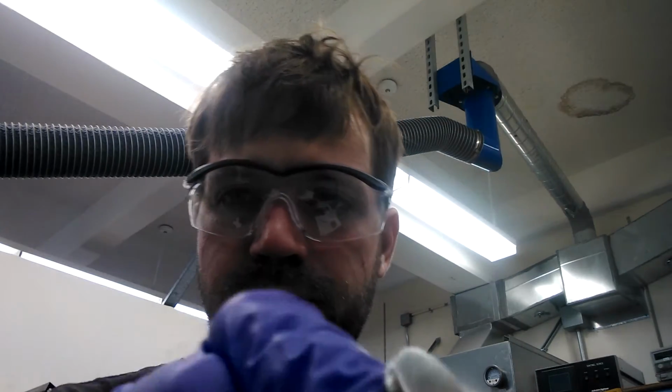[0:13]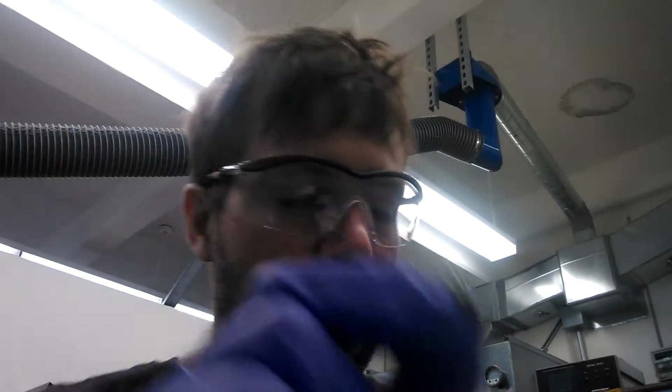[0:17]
All right, today we are going to polish aluminum to the scientific grade for scanning electron microscopes. What we have is these very small targets. And as you can see right now, it's already pretty shiny. If you get a close-up look though, it is not a mirror yet. So what we've done is we've sanded these already.
We took a 180 grit sandpaper, we ground down the surface so that all the flaws were out. We moved up to a 400, 600, 800, 1000, 1500, 2000, 3000 grit sandpaper, one at a time until we've removed all of the surface scratches, everything that's pretty deep. And because you need the surfaces to be parallel when you put it in the scanning electron microscope, we made sure that we had this on a flat surface. We just put down a pane of glass and then we sand it on top of that. And that keeps everything very, very flat.
The first step is to clean off everything. We can do that with just water. We can just rinse it off. But the second step after polishing is to clean everything with an ultrasonic agitator, because if you have any particles left on there, they're going to look really big in the scanning electron microscope. So this is how we're going to do the final polish.
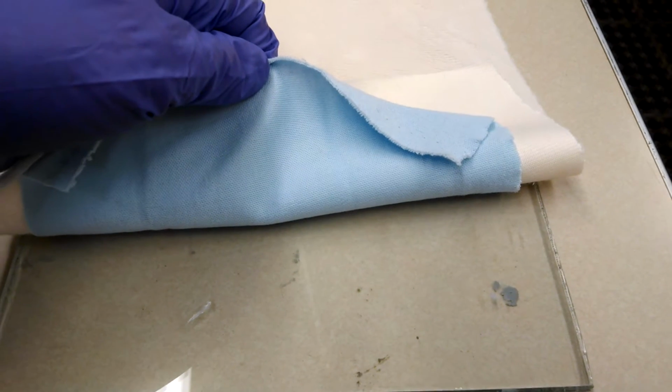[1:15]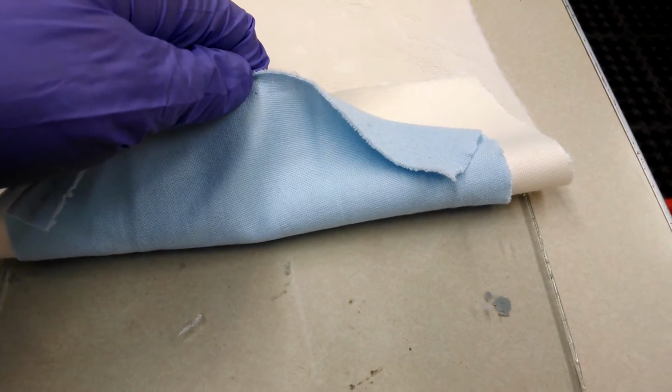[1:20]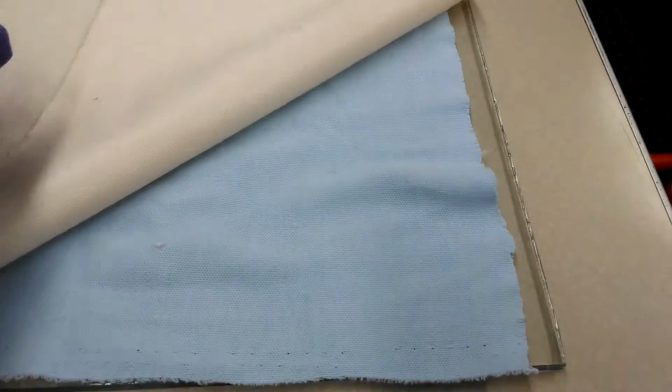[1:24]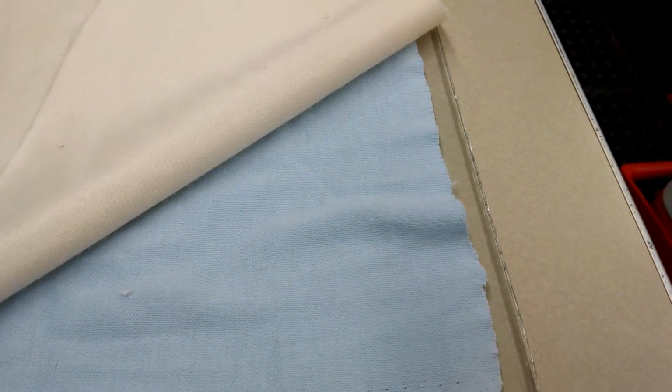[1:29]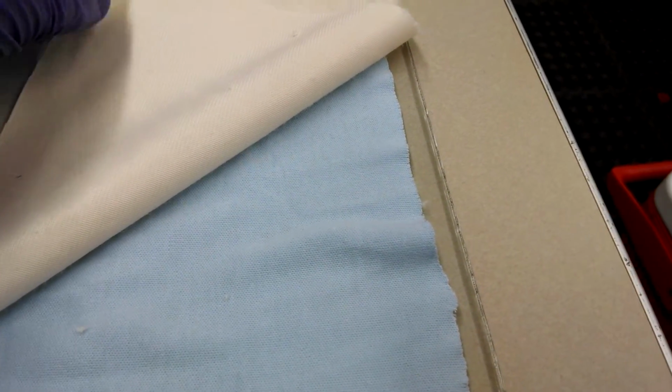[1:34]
This is our polishing surface. As you can see, we have our piece of glass. The back side's a little bit dirty, but the front has been cleaned with a razor blade. All of the dust and everything is off. The second layer that we have here is just a piece of t-shirt cloth. Again, really clean, but that makes sure that if anything goes through our polishing surface, it doesn't agitate the glass and have any particles come back up through. And the last is this super fine cloth. It's essentially, I think, what they make teddy bears and stuff out of. You can find it at the craft store. It's probably about $20 for a yard.
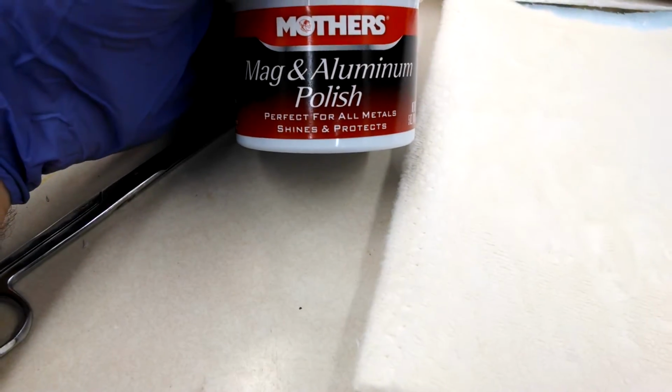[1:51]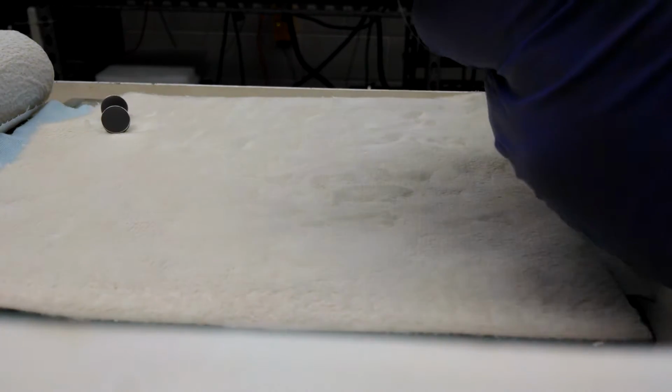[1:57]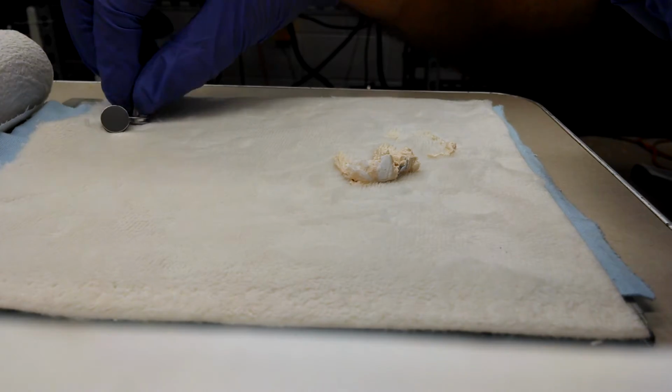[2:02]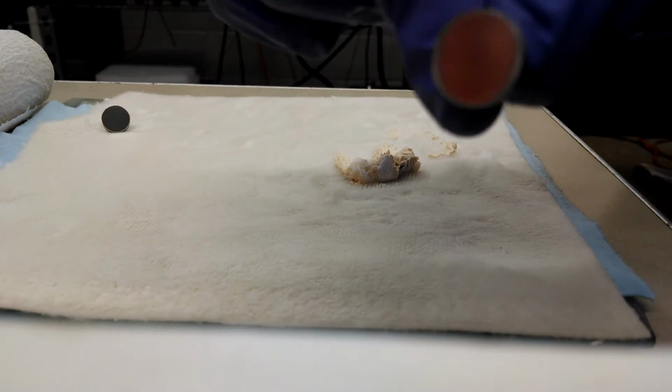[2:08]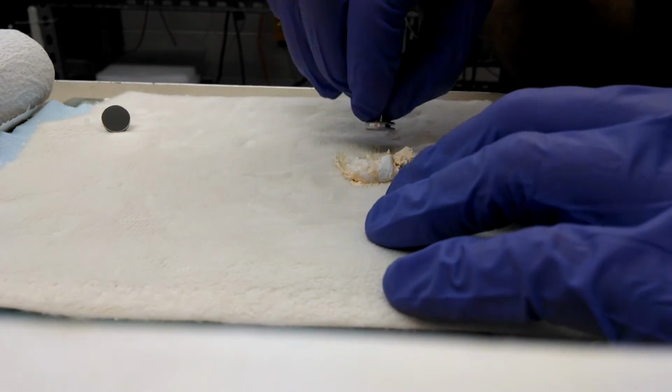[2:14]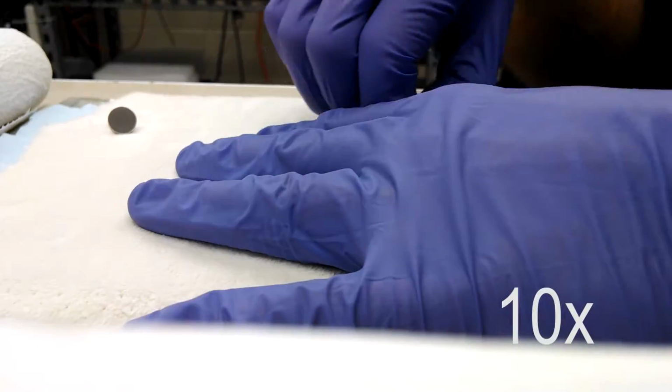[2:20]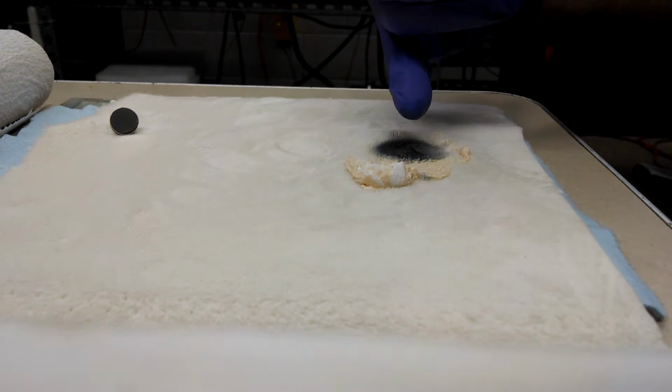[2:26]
So what we are going to do is take this Mother's Mag and aluminum polish, and put some on this surface. The way I do this is I take some of the clean Mother's Mag, just put it down, and I'm going to take one of my fairly finished targets here, and I'm going to mash this around. So we're going to find a spot here, and we are just going to go in circles. And you can see once you start rubbing in the magnesium polish, you're going to start getting this gray. That's just essentially taking off that last little layer of aluminum.
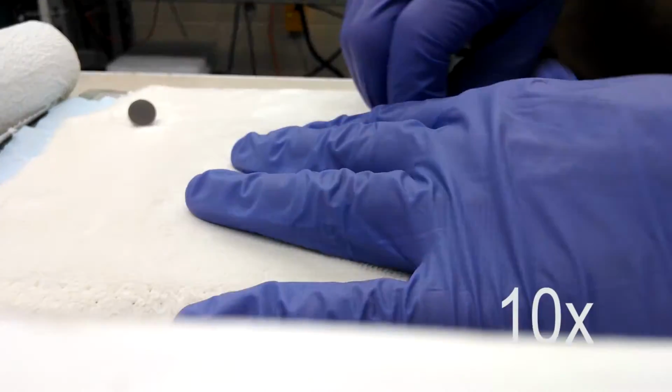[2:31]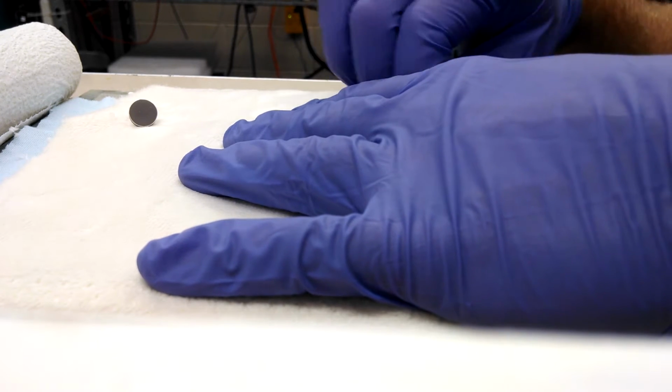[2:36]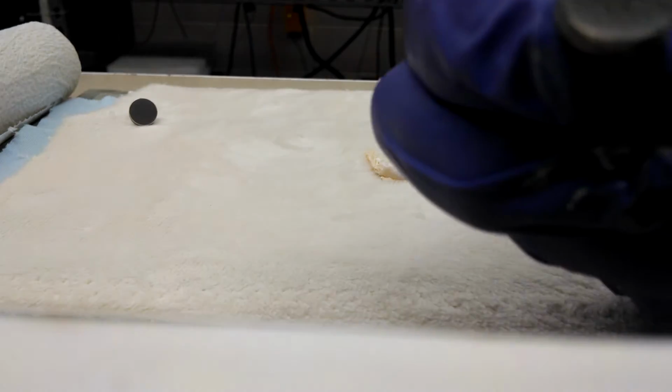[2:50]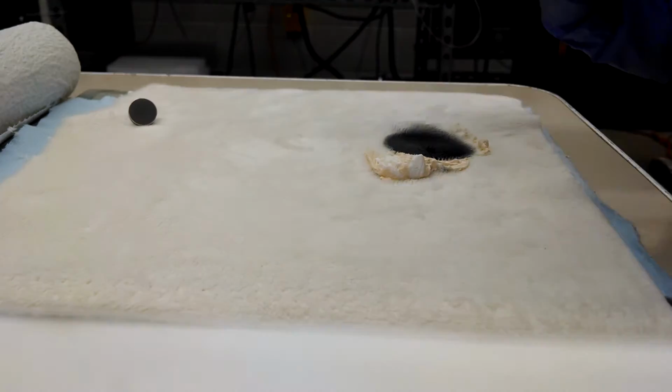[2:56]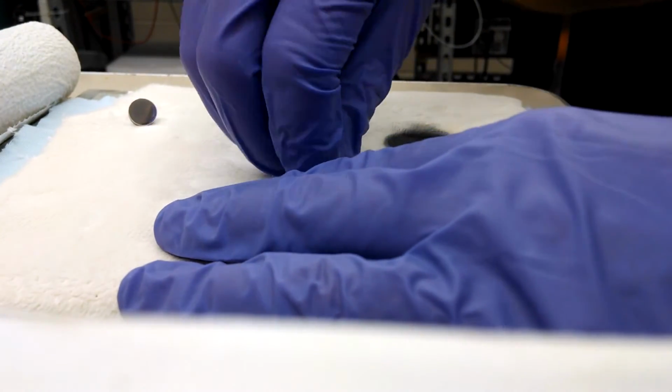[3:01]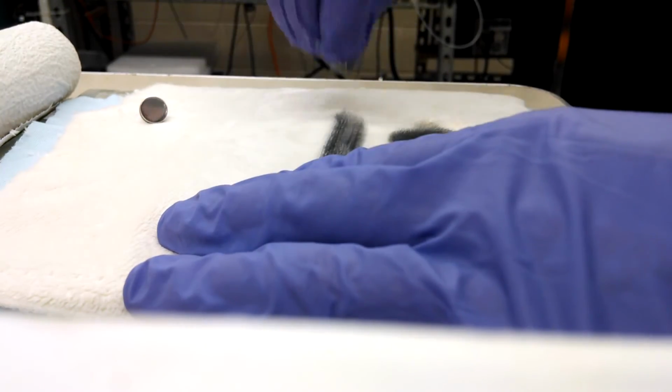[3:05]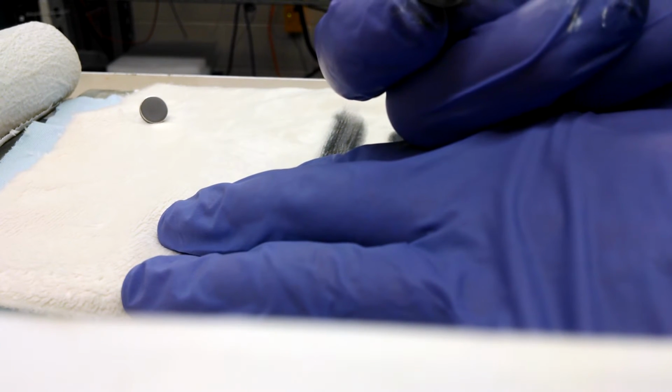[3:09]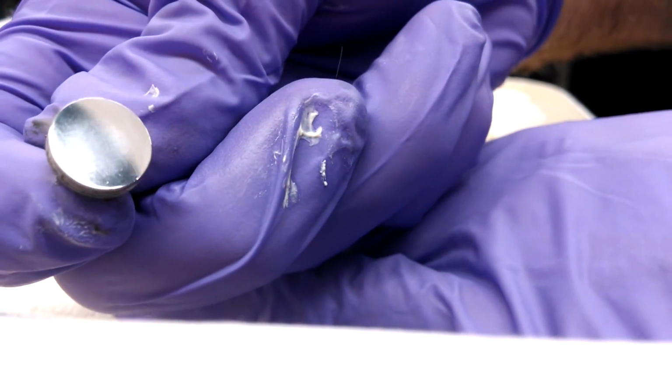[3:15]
We're going to go in circles for about a minute, and what that's going to do is essentially remove all the little scratches, all the little micro abrasions that are still on the surface, and hopefully get it to a pretty nice polish. So we're going to have something that looks about like this. You can see in the light, it is pretty dirty looking. So now we are going to just draw straight lines with it. If we keep going one way, when we look at it, we should see that there is no haze or anything on here and no scratches. If there's still haze and scratches, what we're going to want to do is go back to the circles.
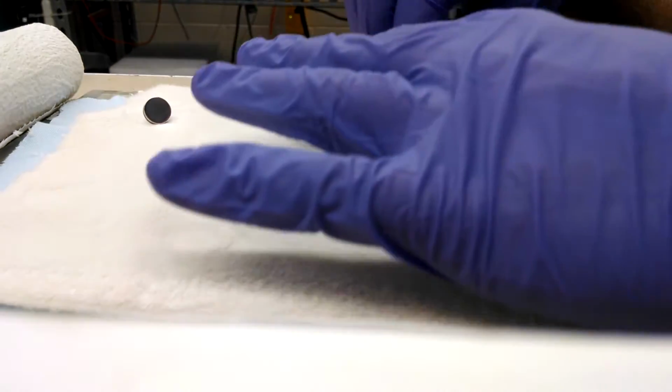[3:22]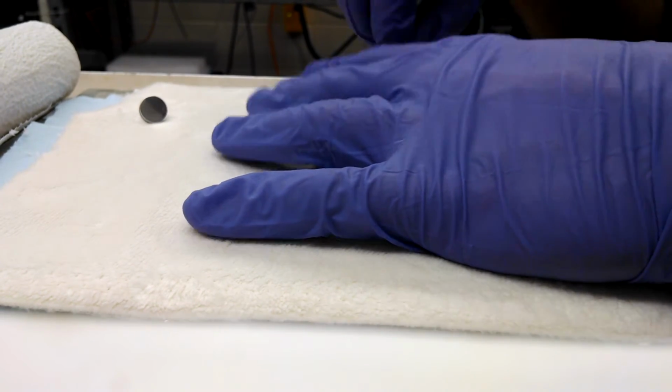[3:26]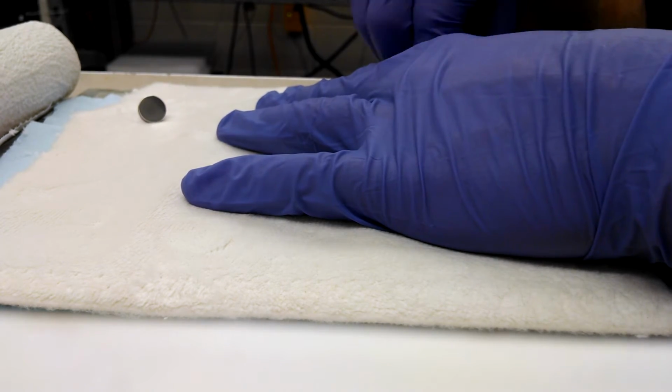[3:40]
So you can see in the middle there, there's a little bit of haze. We're going to go back to the circles. We can either go on the same spot or we can just start a new spot. I'm just going to start a new spot. The haze is really what we're trying to get rid of the most right now by doing the circles. Once we start going in lines, we're going to make sure that there's no more surface scratches, and then we'll be done with this step. The second step is going to be to put it in the ultrasonic cleaner.
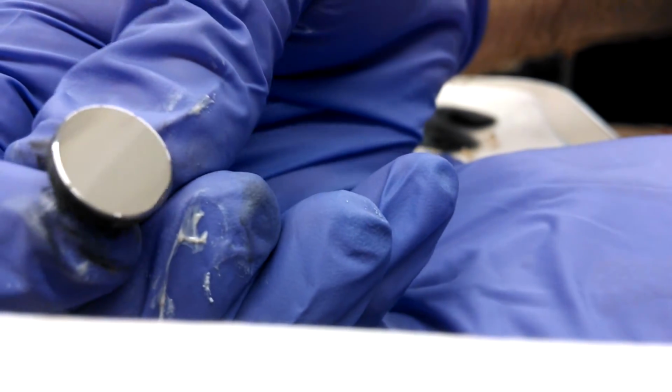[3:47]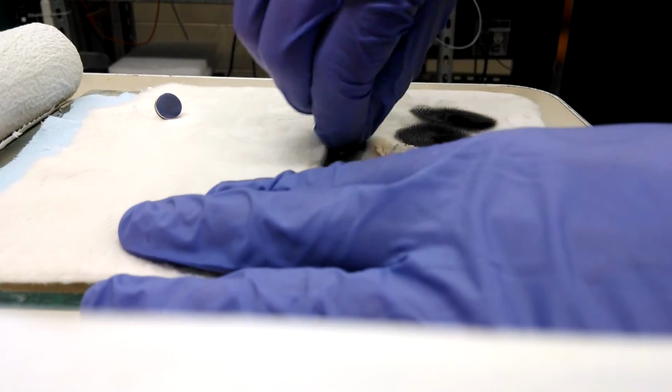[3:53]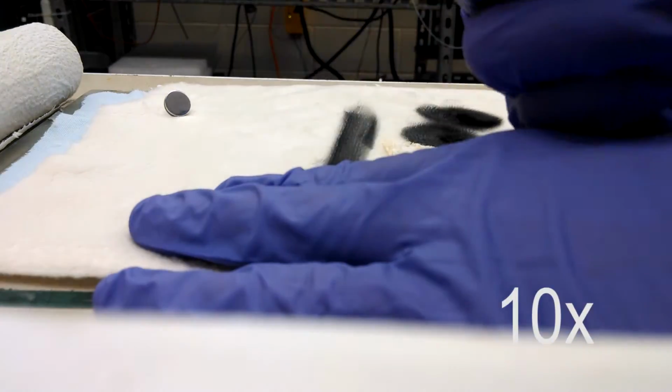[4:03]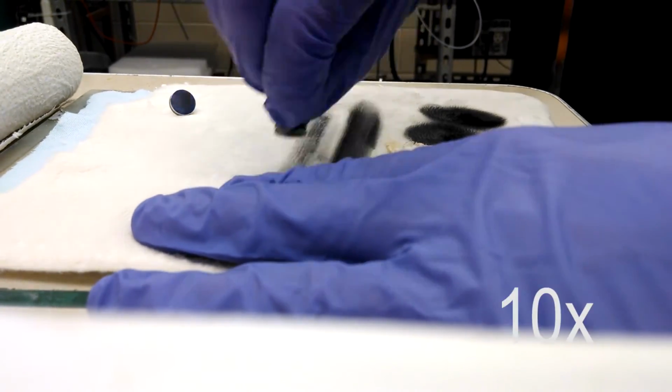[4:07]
Wonderful. All right, so now you can see there is no more haze on this surface. There's also no more scratches, so I'm just going to go the other way. So now I've rotated the target 90 degrees. I'm just going in the same direction again. This is going to make sure that there is nothing on the surface, because there's chances that there's little scratches there that I just can't see. I'm going to go beside it, just another few strokes.
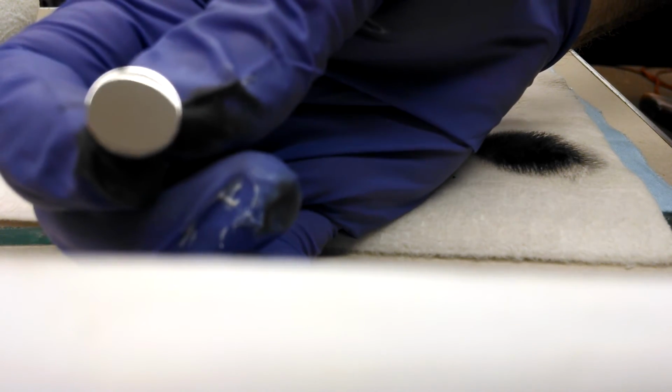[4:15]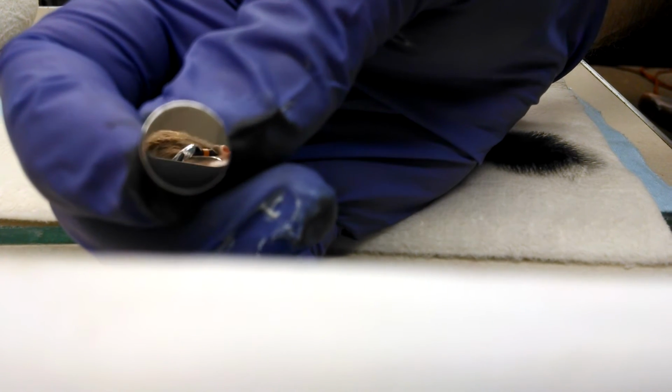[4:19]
All right, we have an incredibly polished surface here. And so there you can see it. We have gotten this perfectly polished. It is ready to go into the ultrasonic cleaner to get all the particles off. It is a perfectly mirrored surface. There's no haze, there are no scratches, and it's looking pretty good.
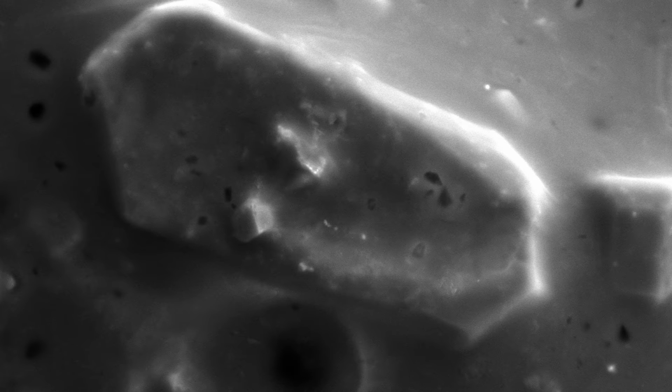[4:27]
Okay, these are images from inside of the SEM. Right now we're looking at particles of sulfur under biofilm. This is at 700 magnification. We're going to zoom into 5000 magnification. Here we go. Now I'm going to go ahead and scroll off of the targeting stub over to just an empty space. Now we are looking at the aluminum stub itself at 4000 times magnification. The head operator says this is a great polishing job. We're going to go into 50,000. And 100,000. If you want cleaner surfaces than this, what you're going to want to do is buy the polished carbon plate holders.
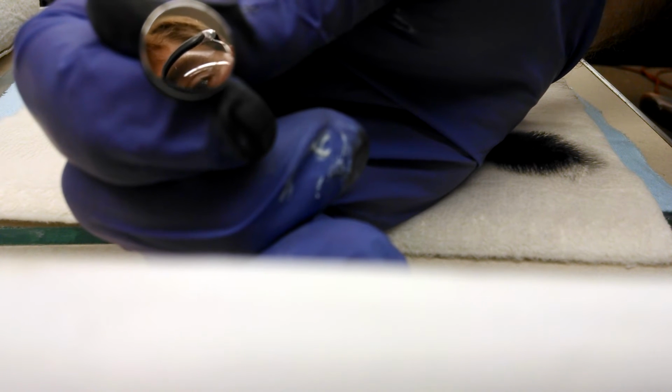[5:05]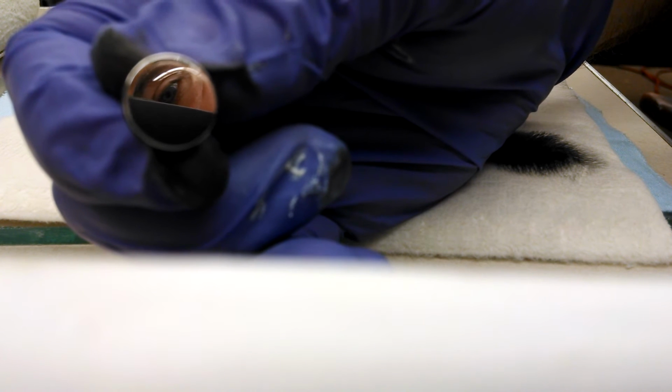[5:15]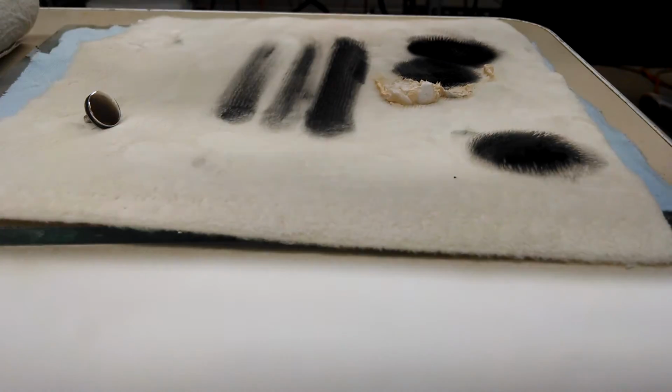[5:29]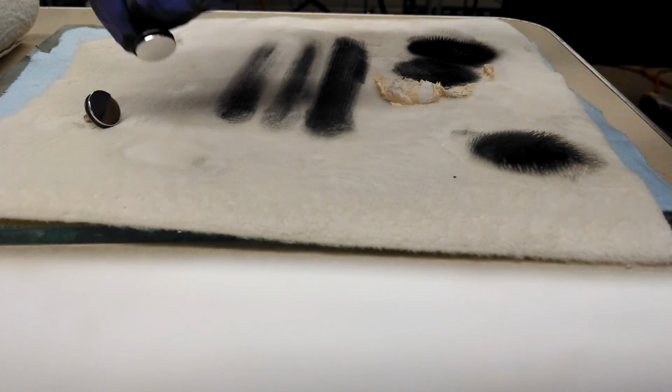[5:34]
And you can glue them onto the targeting pad. Otherwise, this is great. So if you want to do this to prep your sample holders for your SEM, go for it. If you are watching this because you're like, I'm going to do this with my car wheels, this is going to take you a long time, but you will have mirrored car wheels. What you want to do is, again, like a 180 or 220 grit sandpaper to remove all the surface scratches, then just keep stepping down in grit size, so like 400, 600, 800, 1000, 1500, 2000, then 3000, and then this Mother's Mag polish on this super fine, super soft cloth, and you should be ready to go.